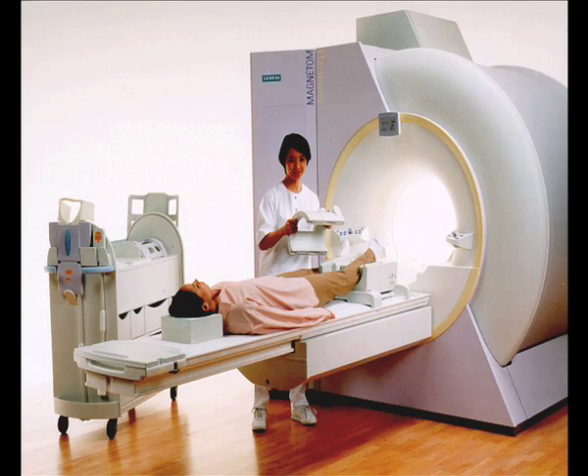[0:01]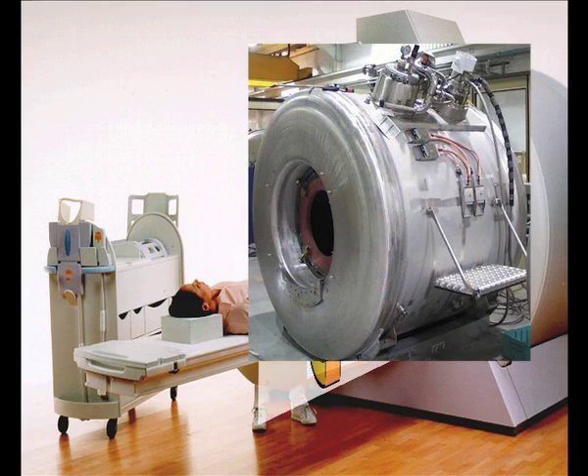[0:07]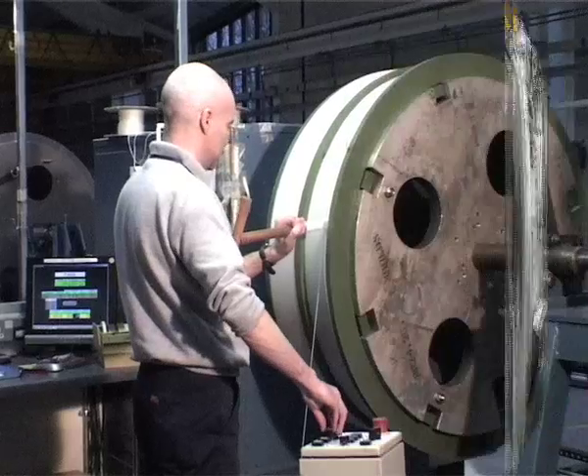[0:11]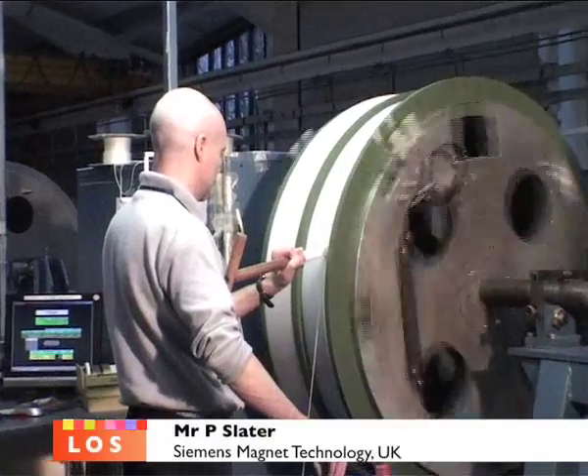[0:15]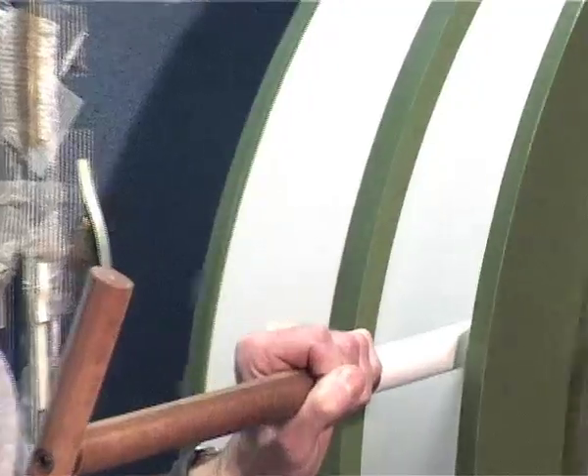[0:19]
Let us have a closer look. What is inside one of the elegant MRI machines, where there is a system of superconducting coils immersed in liquid helium? The winder here is winding one of the drive coils for a magnet, which will form the Helmholtz pair at the end of the system.
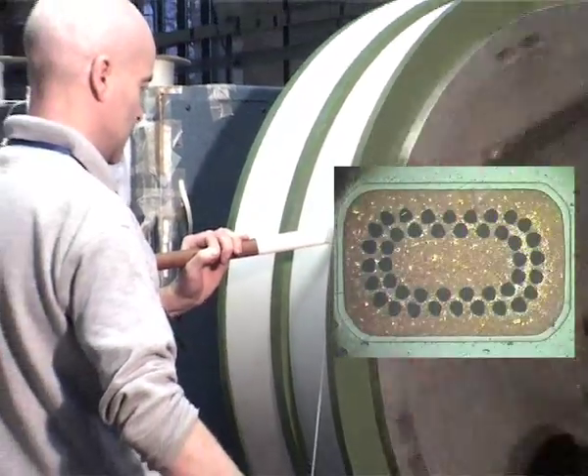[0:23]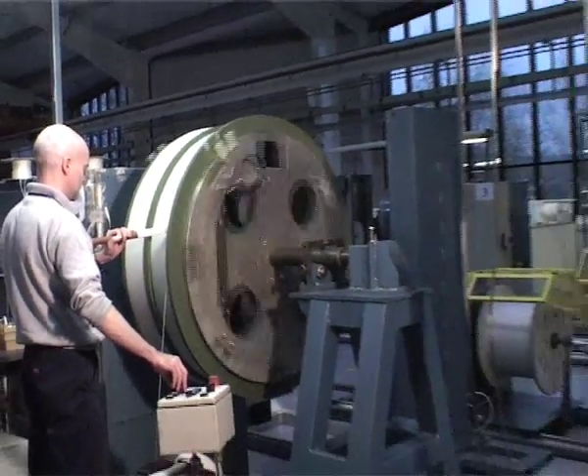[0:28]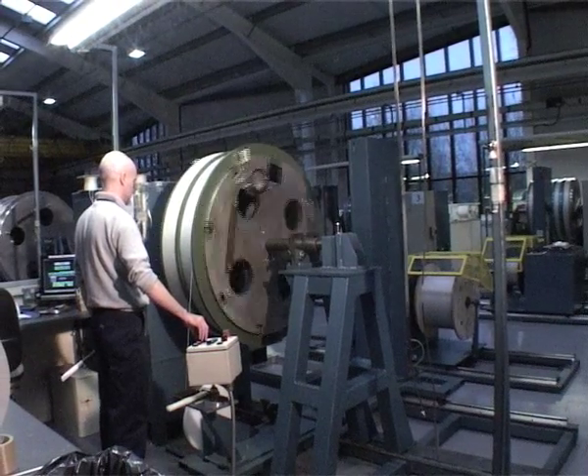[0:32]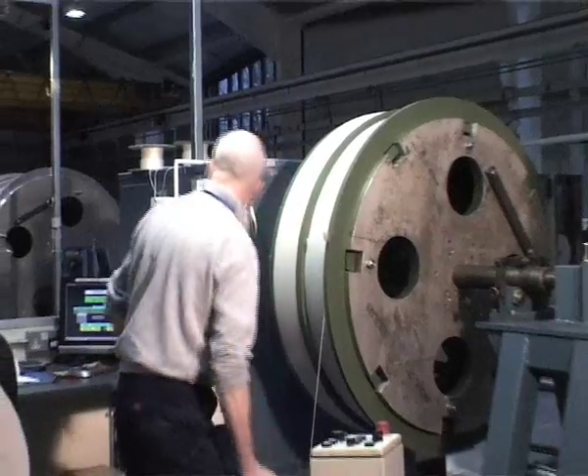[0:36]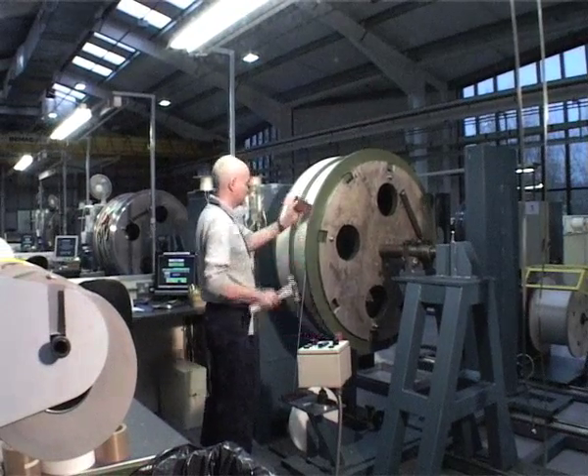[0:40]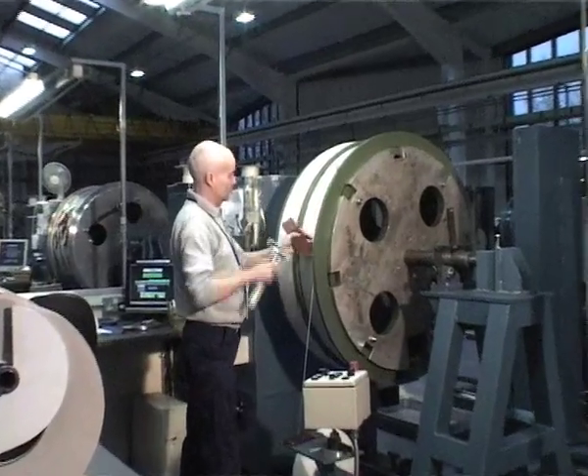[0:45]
We wind using rectangular wire. This improves the winding process, makes sure that every layer, well, turn to turn, winds consecutively and stays in exactly the position we want it to stay in. At the change from layer to layer, we have to make sure we don't have any electrical shorts.
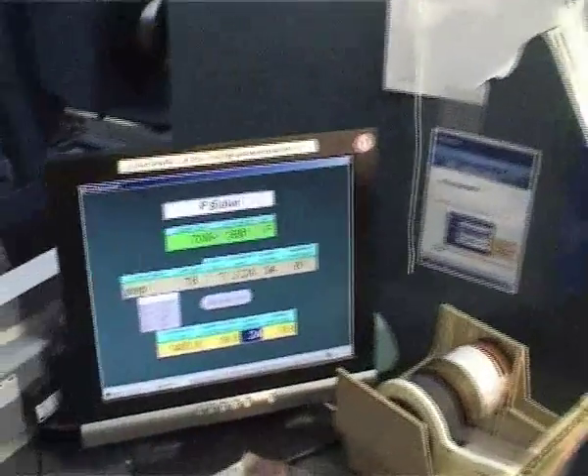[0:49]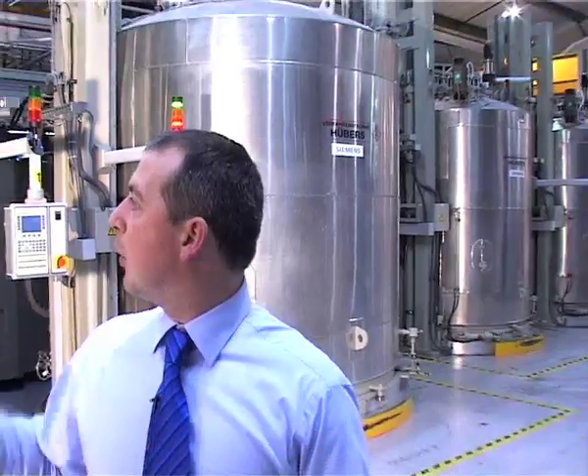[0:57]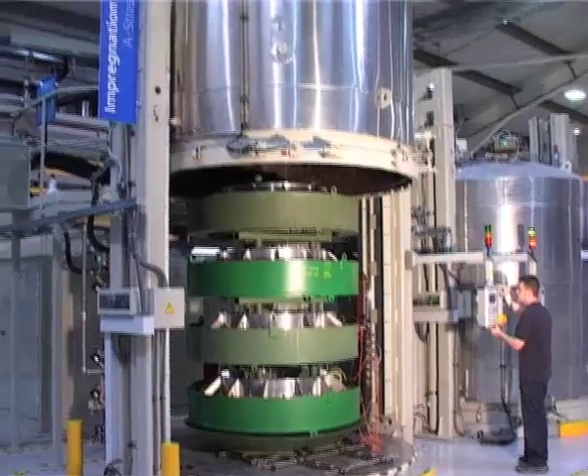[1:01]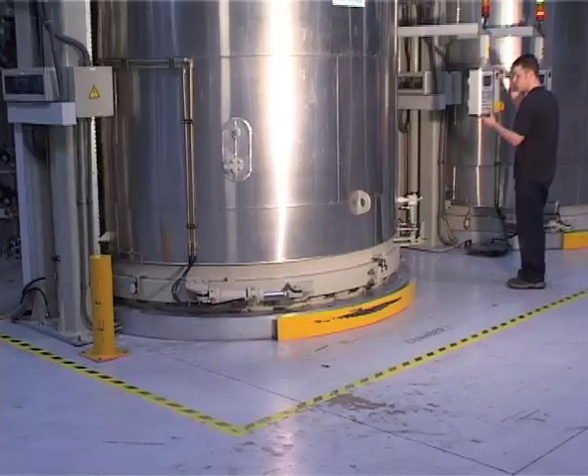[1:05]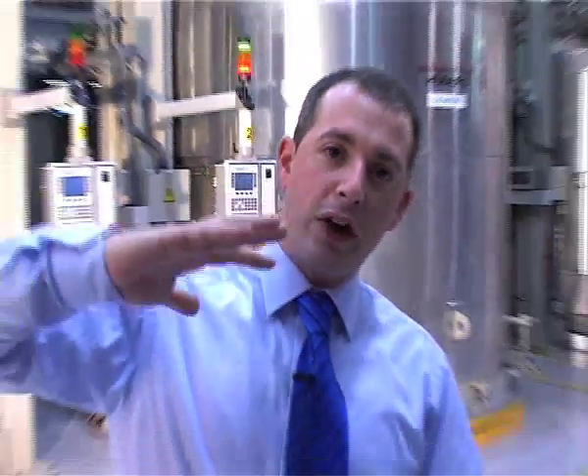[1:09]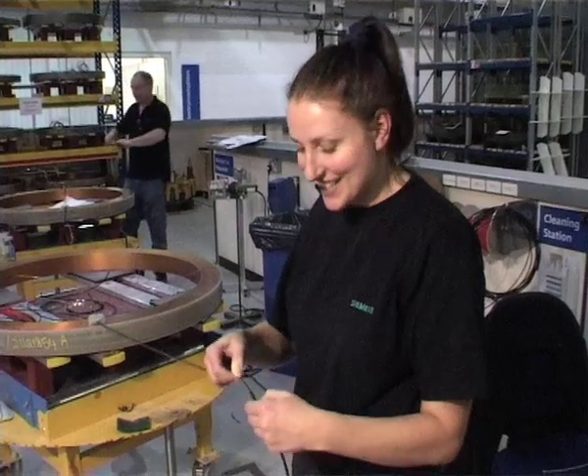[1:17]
In this area, we vacuum impregnate our coils. This is where we get resin. We evacuate these chambers. We then fill each of the troughs with resin and then apply an overpressure to ensure that the resin is pushed down into the coils. We then allow the coils to set, and this gives us one compound structure. These heater wires, I'm pushing polyolefin over the top for insulation.
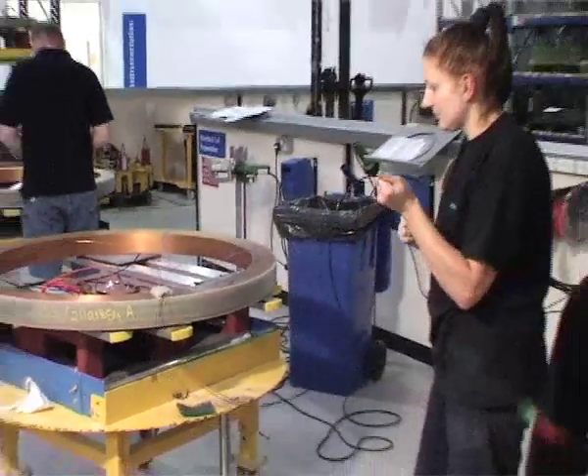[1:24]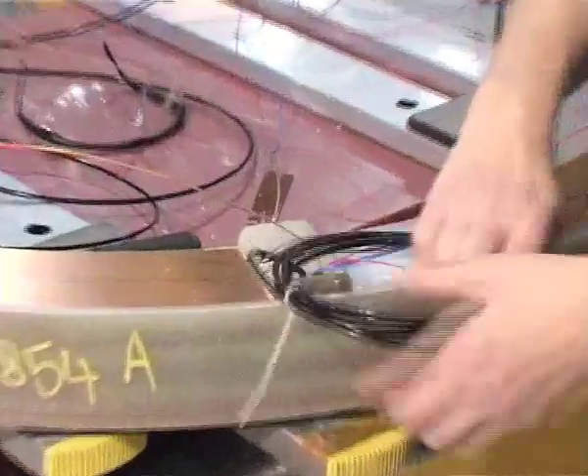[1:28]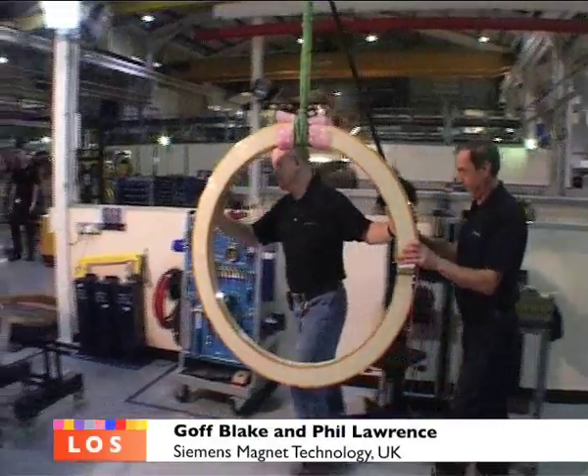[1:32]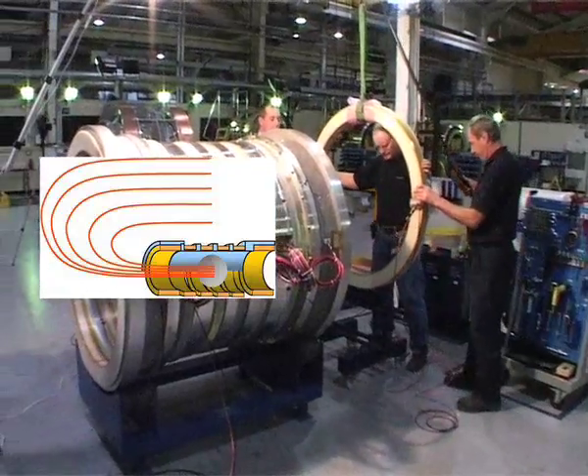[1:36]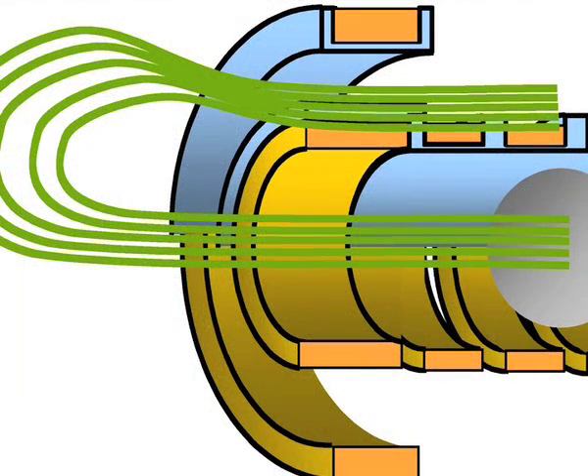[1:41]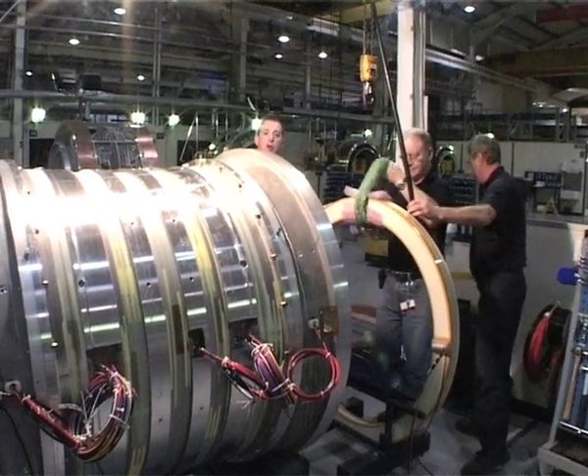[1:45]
This final molded coil is the last piece of the inner magnet. All of these coils run in the same orientation with the current, and will be added to other coils which run in opposition to these coils. The peak field inside of this coil reaches approximately 5.5 to 6 Tesla.
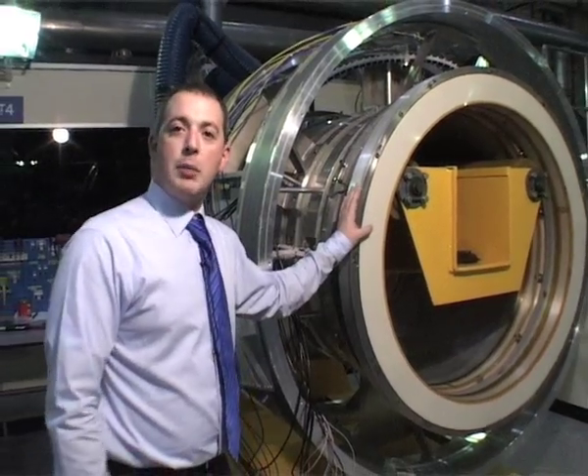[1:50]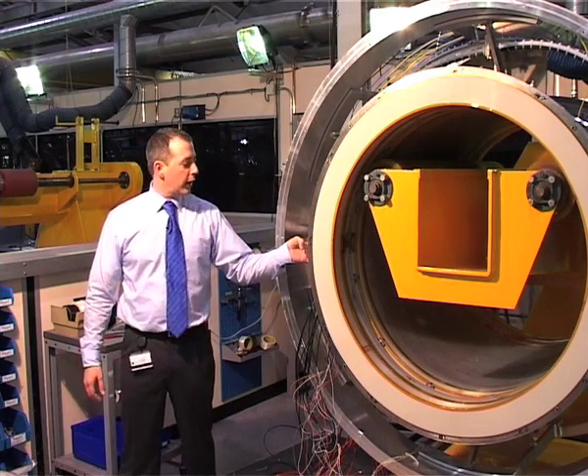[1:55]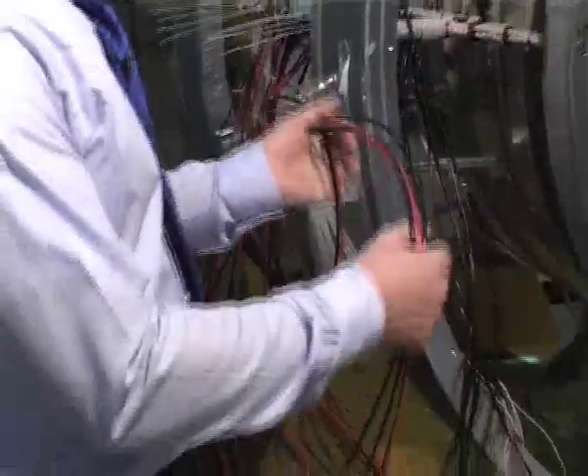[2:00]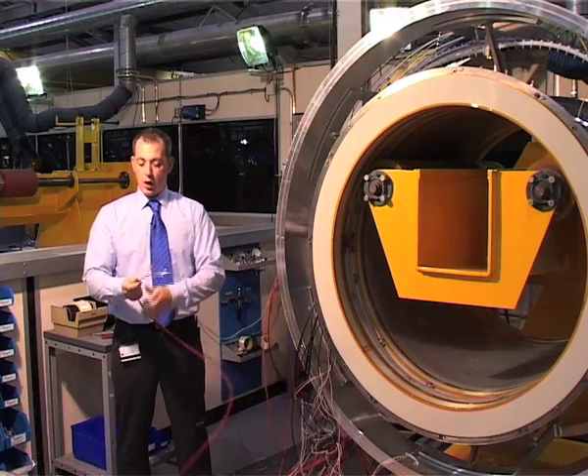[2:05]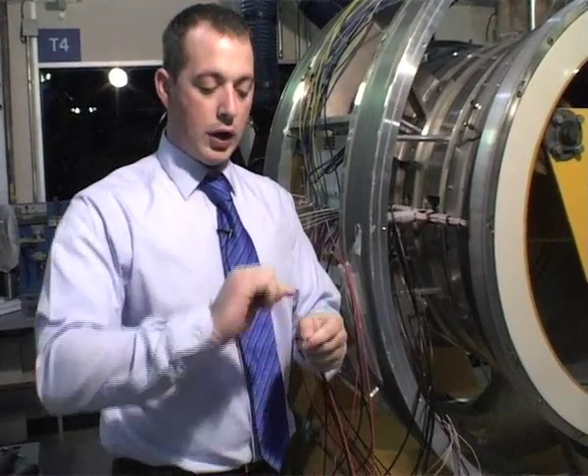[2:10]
Here we have a fully assembled inner of the magnet. As you can see, all of the leads that we saw earlier are all routed now into one central place. These wires, all the black and red, are connected end to end via a jointing technique, which allows a persistent current to run straight from one wire into the other wire. With new materials like HTS, it's also very difficult to make an electrical contact, because to solder the silver together is a simple job, but to make a really superconducting contact with a picoohm or less resistivity.
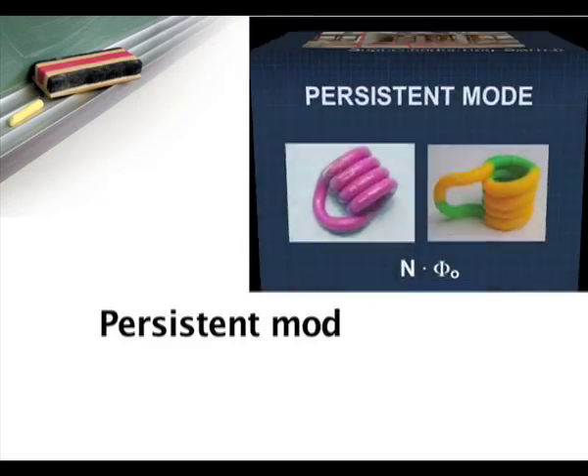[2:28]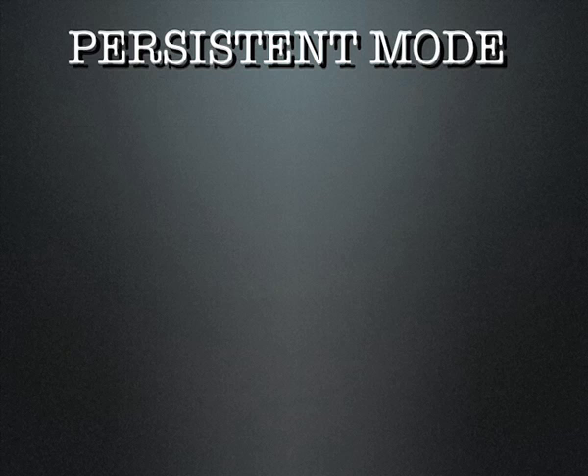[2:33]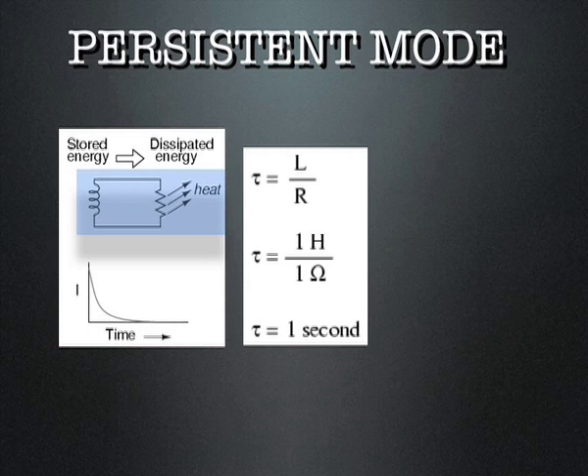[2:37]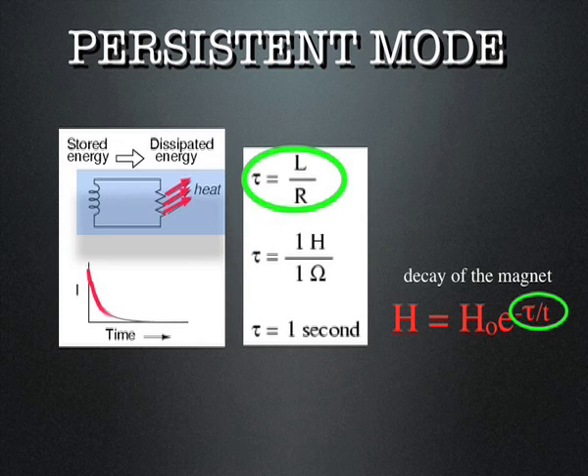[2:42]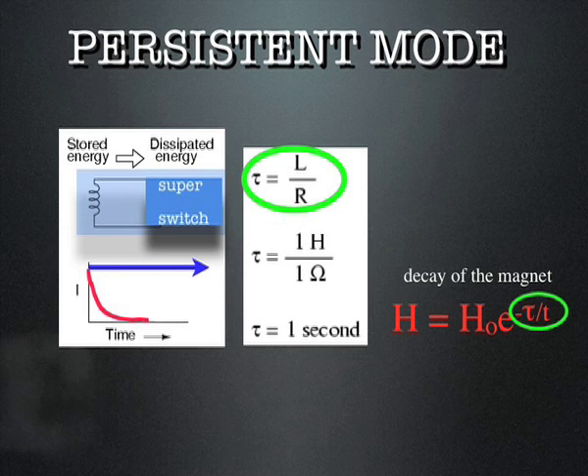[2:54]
If the superconducting coil of the given inductance is bridged with a non-superconducting lump, the trapped flux and subsequently the superconducting current decay very quickly, according to the equation expressing the decay time constant as inductance over resistance. This case is represented by the red curve. If the resistive clump is replaced by a superconducting bridge, so the whole circuit is in a superconducting state and resistance is equal to zero, the decay time constant tau has a very high value and the superconducting electromagnet is in a persistent mode.
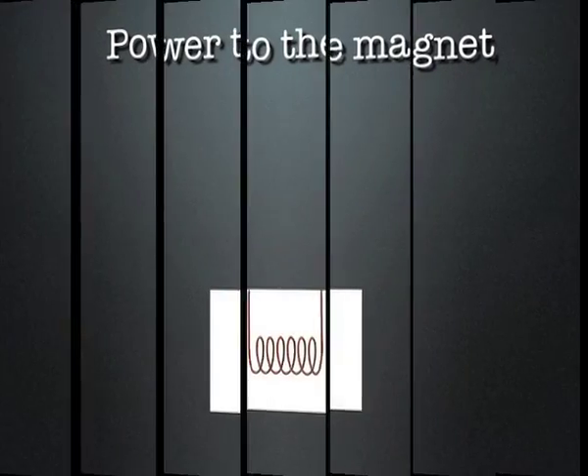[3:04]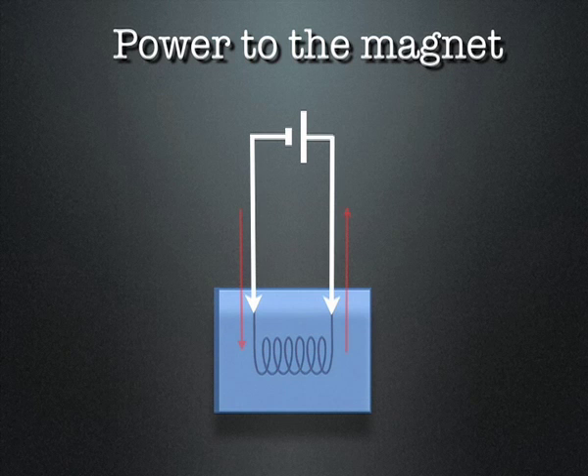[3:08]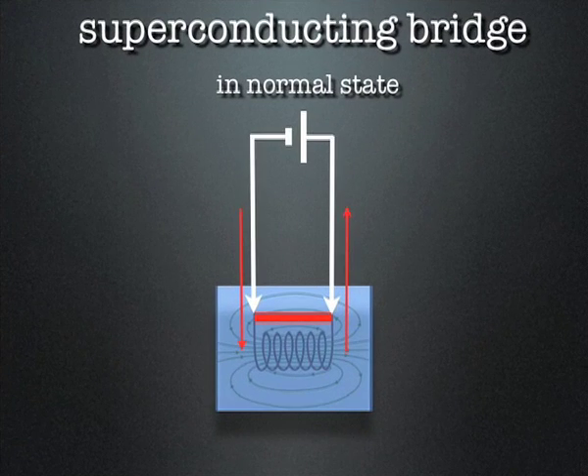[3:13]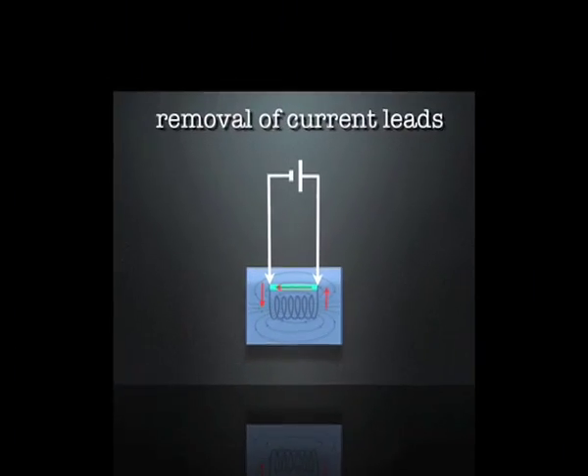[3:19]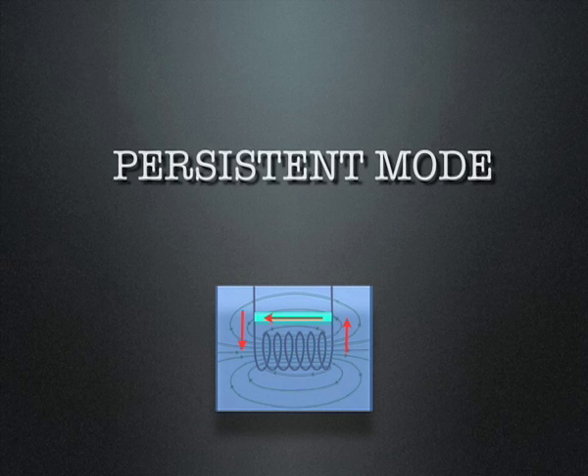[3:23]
The following animation underpins the stages of charging the superconducting electromagnet bridged by a superconducting switch, initially in the normal state, followed by the superconducting state after reaching the desired value of the flux density in the superconducting electromagnet. Removal of the current leads in the final stage reduces the heat leak to the liquid helium bath. Now the MRI machines of Lotus C are stable. Basically the resistance in the magnet is so low that they will not decay within 1,000 years or so.
But in the beginning of MRI this was different. The superconductor was not so good, in particular the joints, and the joint technology was not so reliable that all magnets were good enough. The difference between an LTS magnet and an HTS magnet is that LTS magnets you can run in persistent mode. You don't need a power supply. And for HTS magnets, you will need a power supply in order to run them.
And to do MRI or to do NMR, you need an extremely stable magnetic field. And this needs a very stable, high-performance power supply. And for HTS magnets, we need new solutions like flux pumps again.
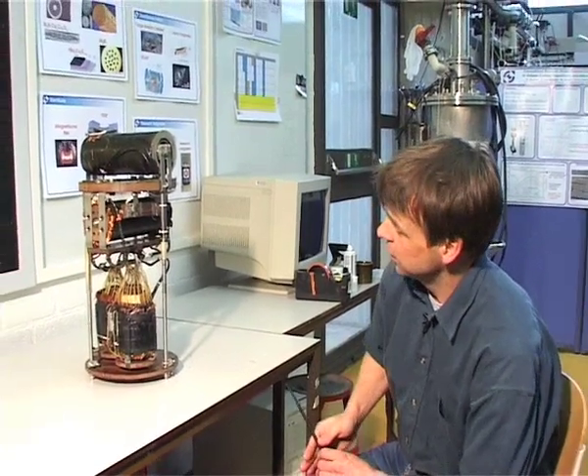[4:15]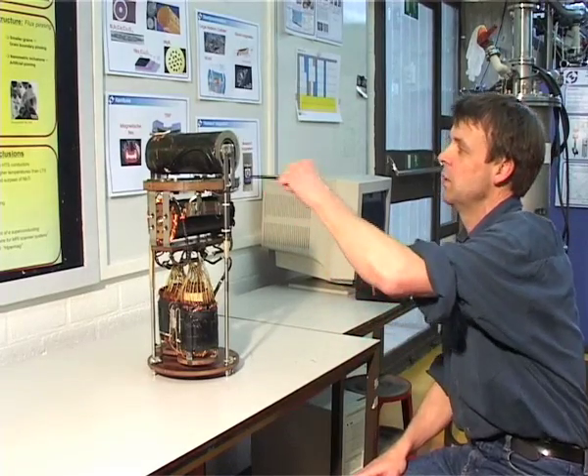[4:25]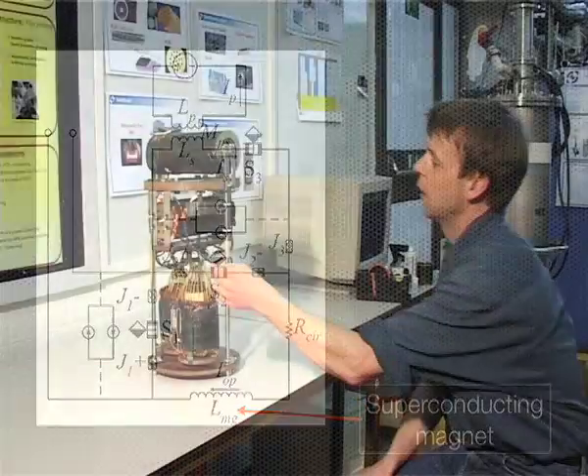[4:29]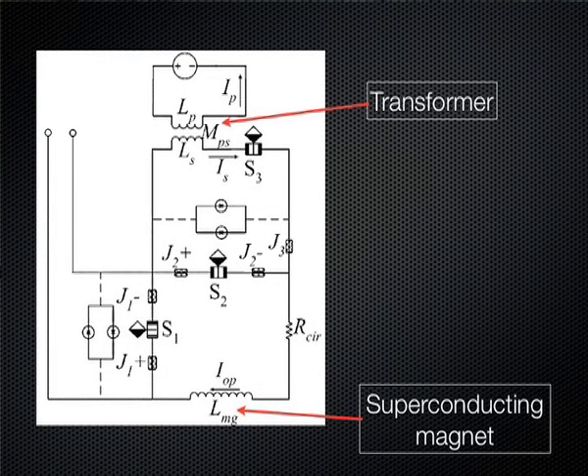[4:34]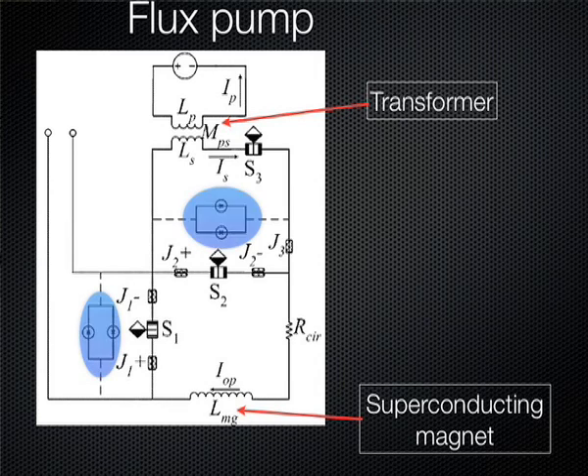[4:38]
What you see here is a very old version of a flux pump or superconducting rectifier. And it contains several elements. First of all, the energy has to go somewhere, so that is a kind of a dummy load where all the energy goes. And then we have a transformer, which is here. This is an entirely superconducting transformer circuit. And the rectifier contains normally diodes, and the diodes are then replaced by a superconductor that is switched from the superconducting to the resistance state.
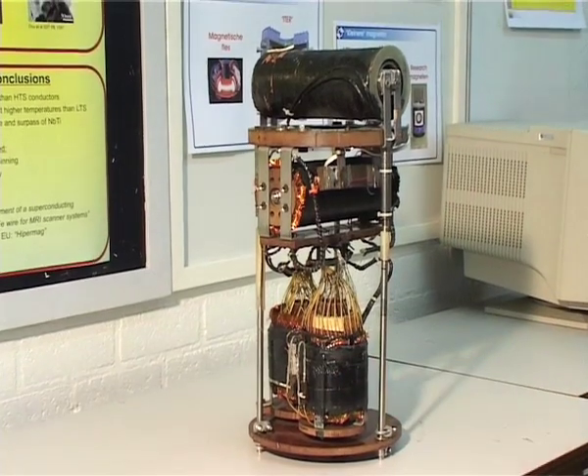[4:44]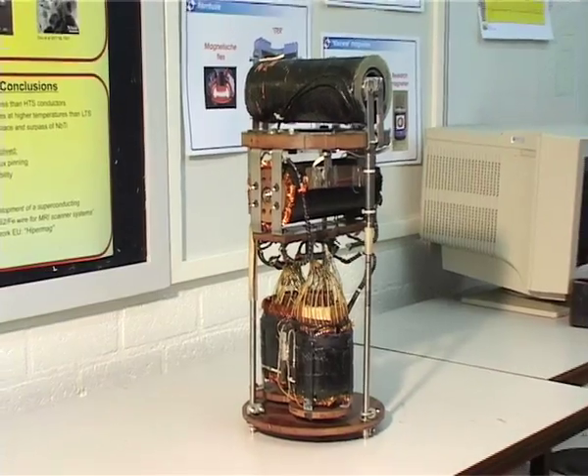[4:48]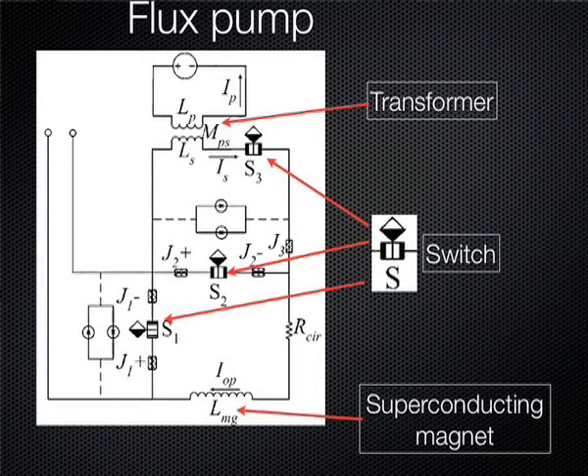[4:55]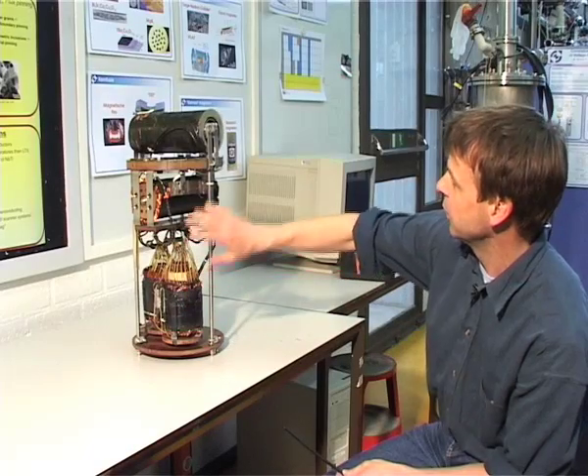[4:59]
There is a magnetic field in the superconductor switched on and off, and that is only done by smart choices of superconducting material. So there's a niobium zirconium material used as the material that will be switched. But then you can apply a current of like 500 amperes to this load while you have a control current of less than an ampere.
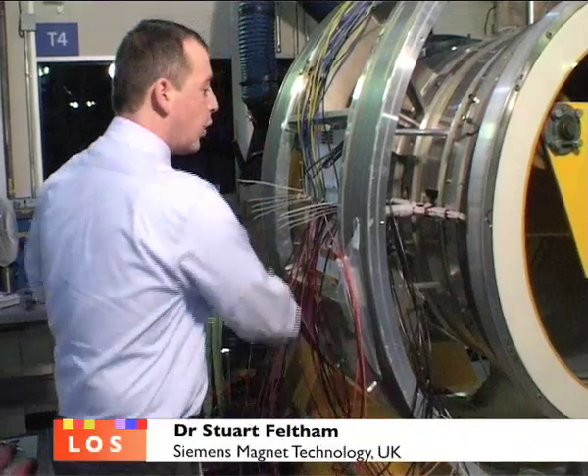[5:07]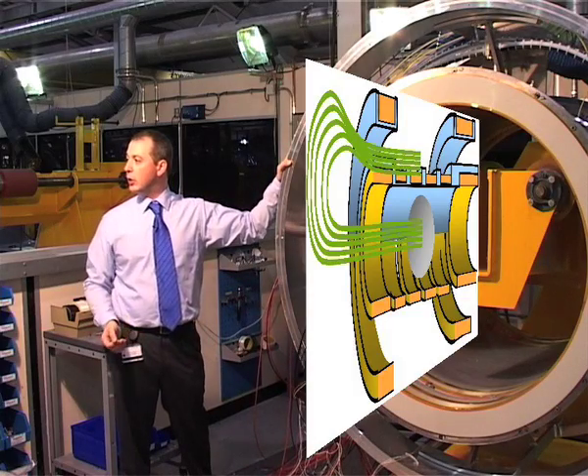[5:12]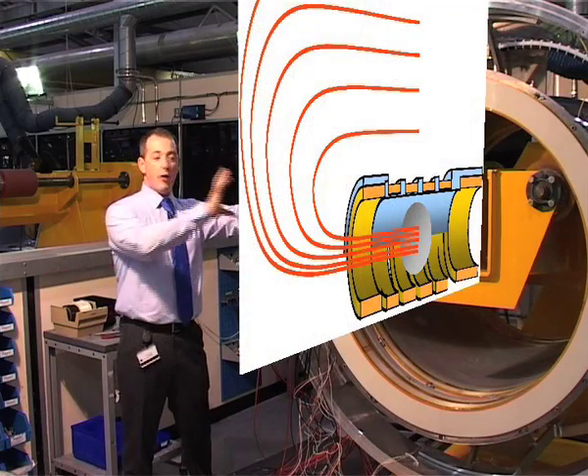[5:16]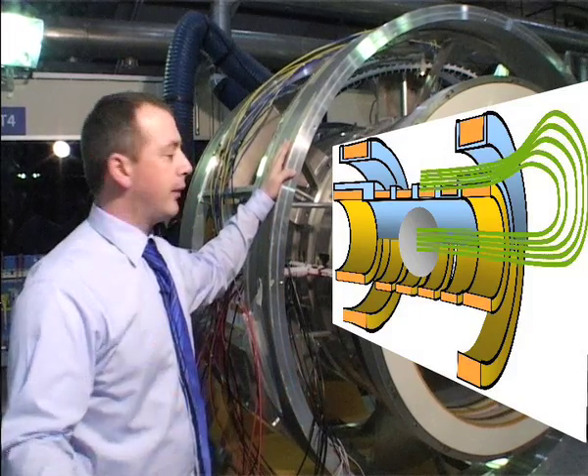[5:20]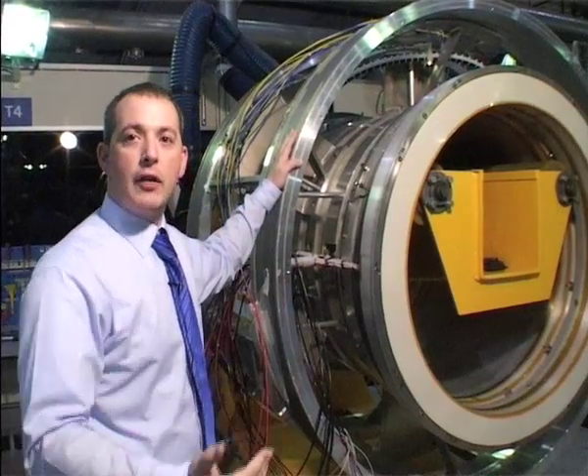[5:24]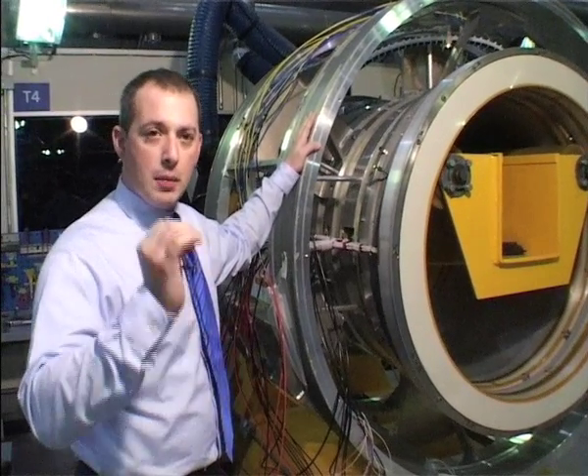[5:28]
This circuit's also connected to two further coils, which we call the screening coils. These coils reduce the stray magnetic field of the inner magnet. Without these coils, we would have large iron shields all around the room, which are very heavy, only allowing MRI magnets to be sited in basements or on ground floors.
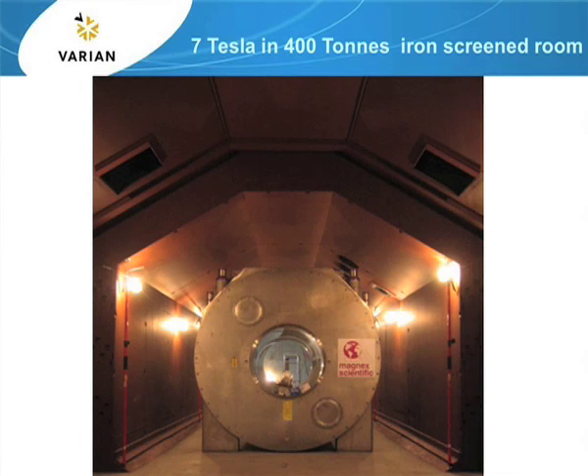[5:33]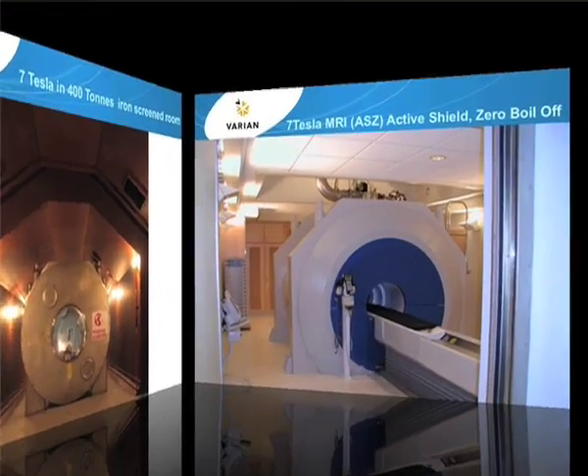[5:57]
So that shows a picture of a 7 Tesla whole body magnet. The magnet itself is not actively screened, so without some additional shielding, the stray field goes out about 40 feet, and the five gauss line is about 40 feet away from the magnet. It's rather out of space. So this picture shows the magnet in an early part of the installation, sitting inside a 400-ton iron screen room. And the purpose of the room is purely to contain the stray field.
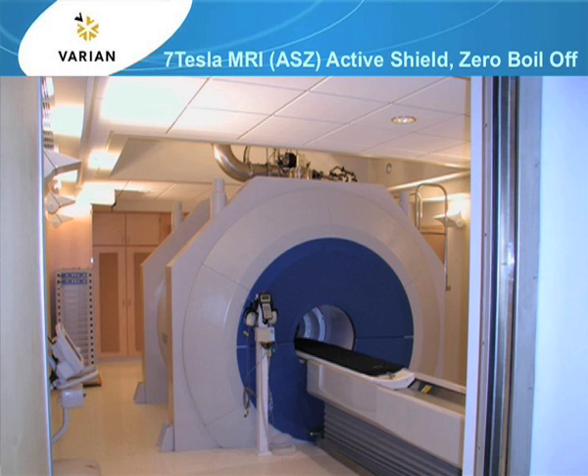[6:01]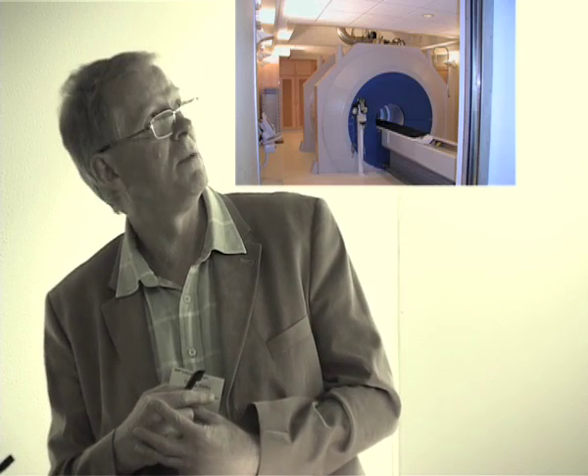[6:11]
We've come up with some interesting new magnets, which will show you how the whole technology of MRI magnets has moved forward. The magnet I'm going to talk about is the 7680, that's the bore in millimetres. The AS is actively shielded, Z meaning zero boil off. And because it's actively shielded, it doesn't need a sealed room to contain the five gauss line.
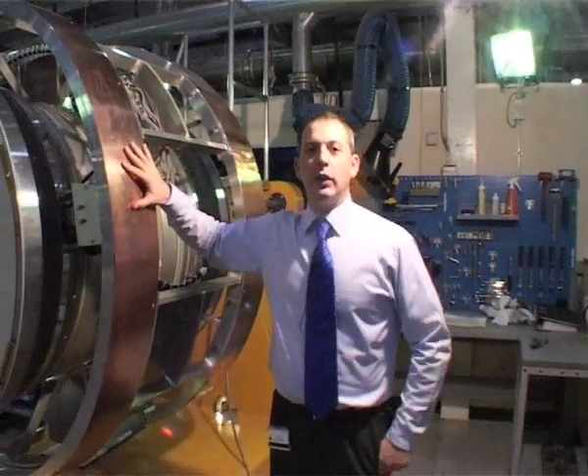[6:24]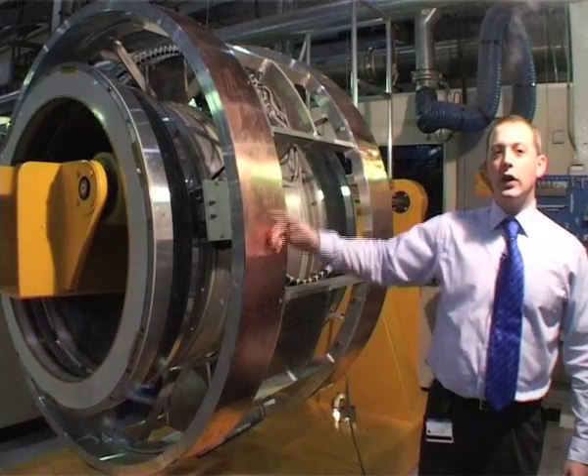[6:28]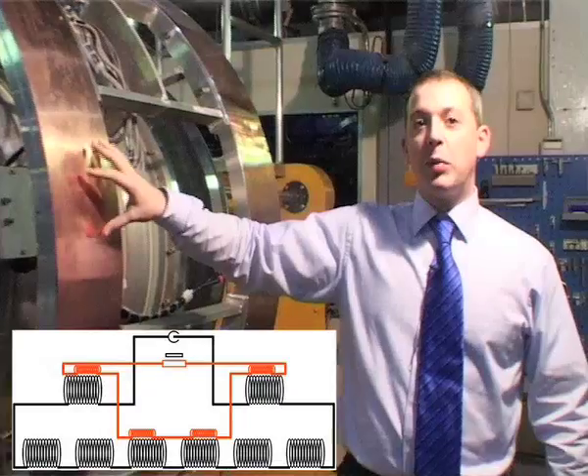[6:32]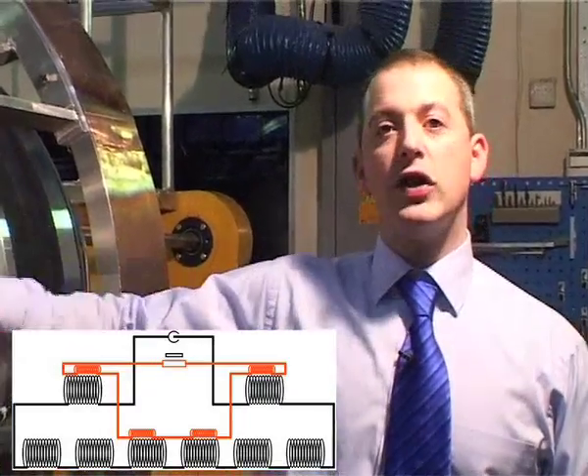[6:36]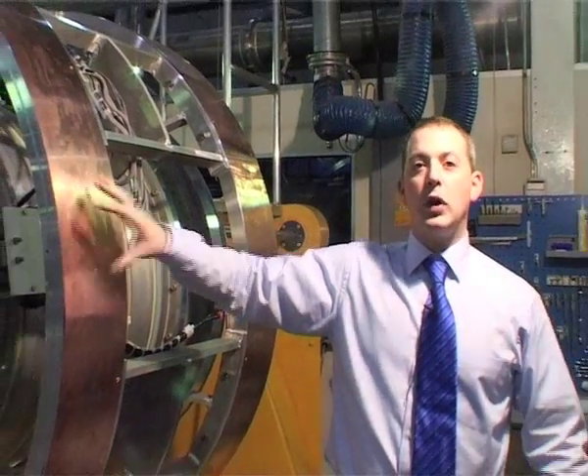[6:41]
Here's a finished magnet. We now have the outer coils covered with a piece of copper. This copper forms a complete ring and is used when the magnet quenches to prevent a stray field burst. As the magnet quenches, eddy currents are generated inside this piece of copper, which oppose the stray field burst produced by the rest of the magnet.
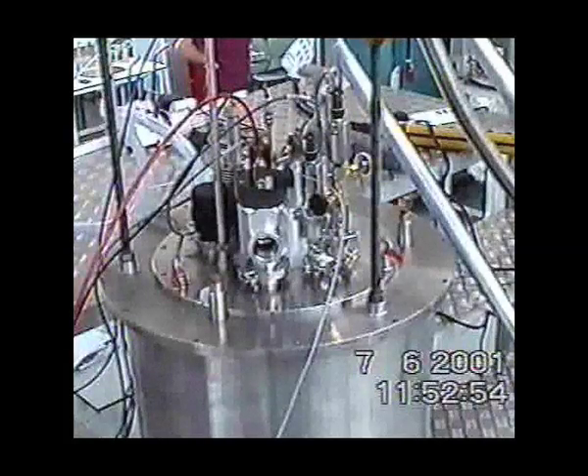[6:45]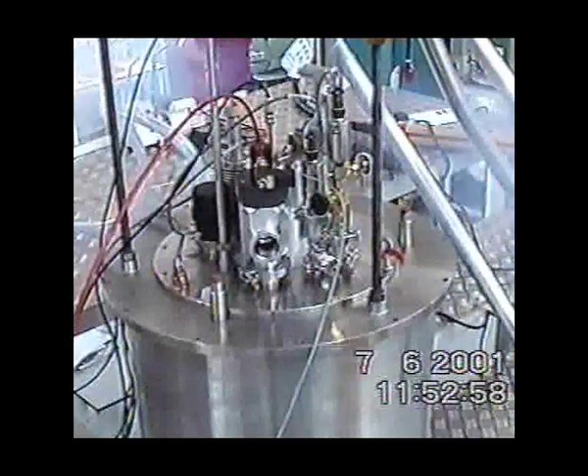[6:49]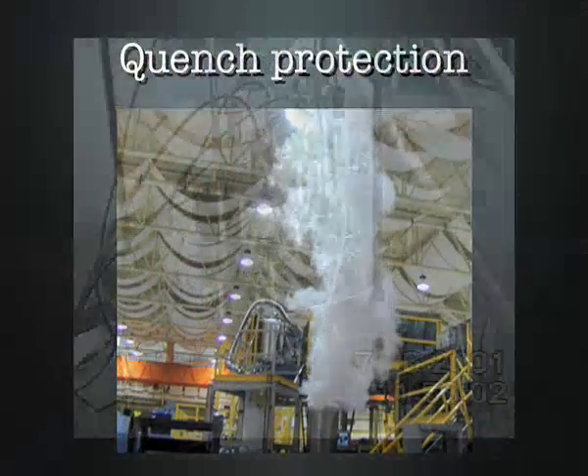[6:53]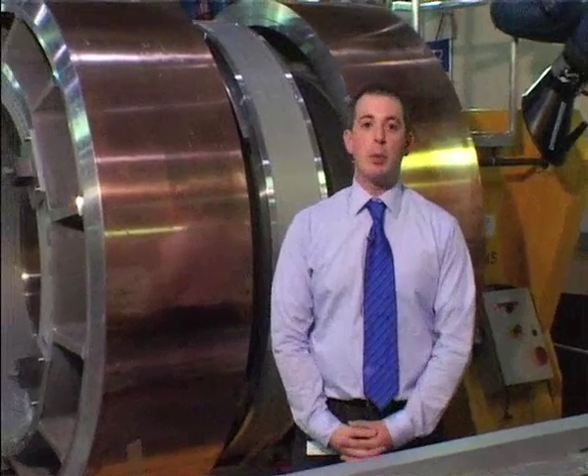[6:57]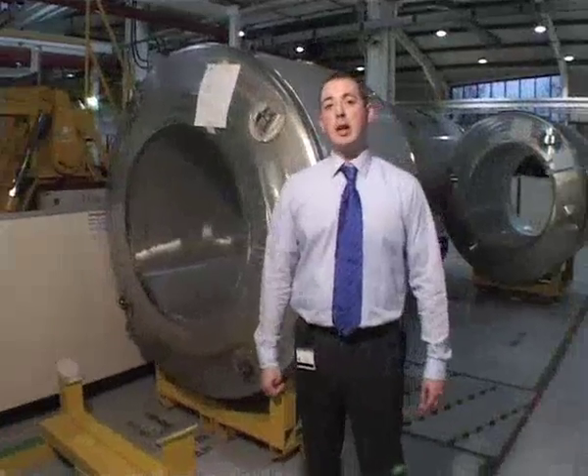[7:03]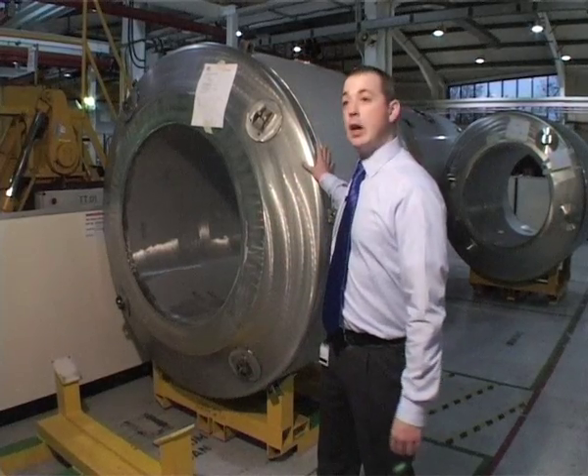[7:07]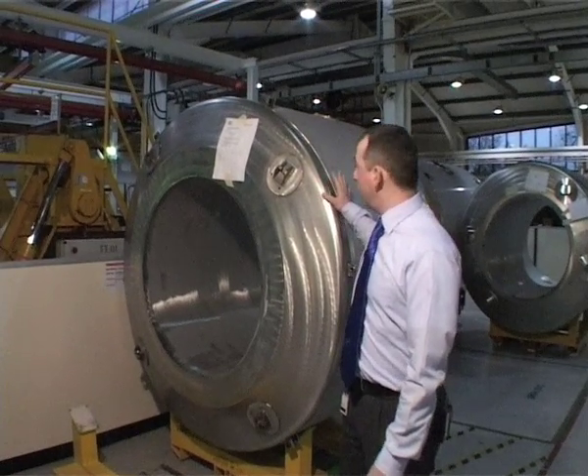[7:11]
If we have a fault during coil winding or during impregnation, the cost of scrapping a 20-kilometer coil is very significant. The superconducting magnet, once finished, is put inside this stainless steel helium can. Inside of this helium can will be at 4.2 Kelvin. Obviously, this needs to be isolated from the outside world.
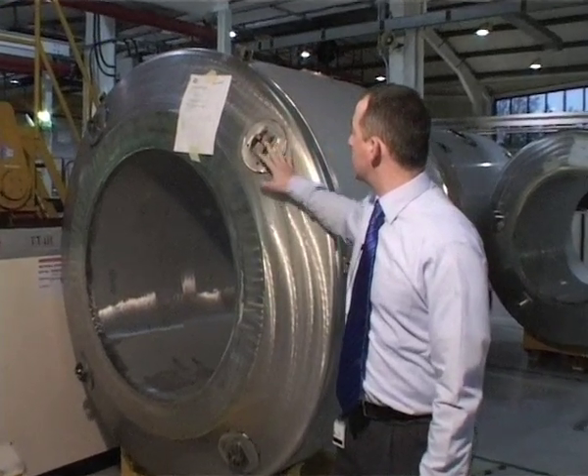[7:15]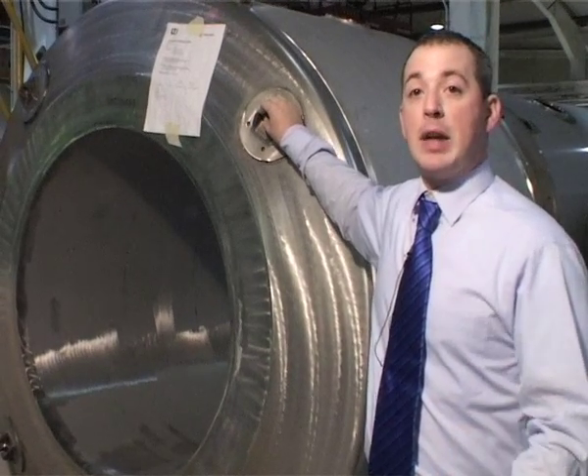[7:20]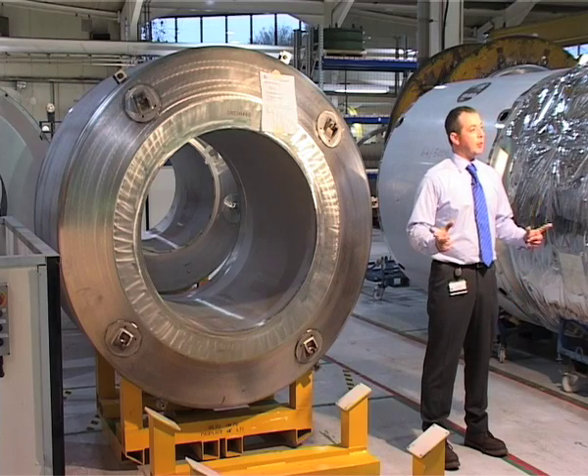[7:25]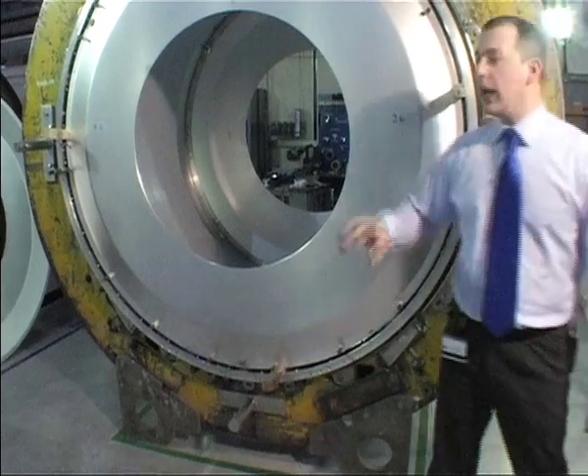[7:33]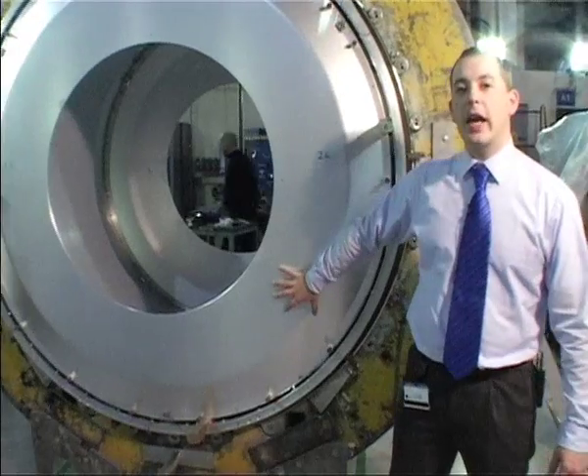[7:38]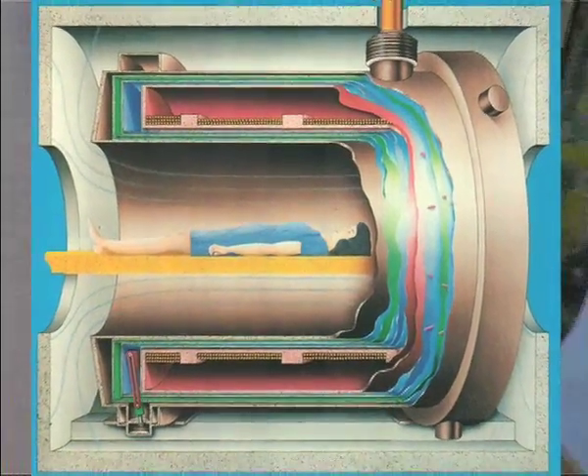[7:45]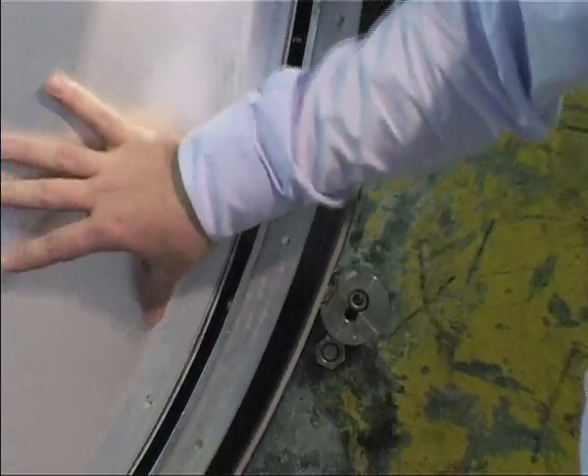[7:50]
This isolation comes in the form of a vacuum space, but obviously we need to suspend the cryostat inside of its room temperature environment. The suspension is obviously low thermal conductivity material, and is attached at these four points on either end of the magnet. The helium cryostat goes inside of here. This is then shelled by a 20K thermal shield. This 20K thermal shield is then separated with the use of a vacuum space from an 80K thermal shield, both of which are attached to a Gifford McMahon cooler.
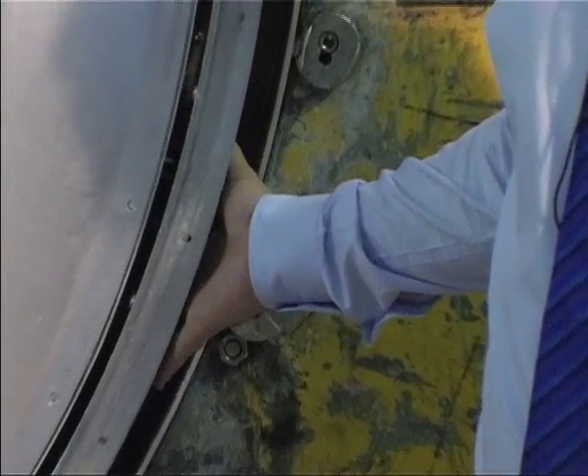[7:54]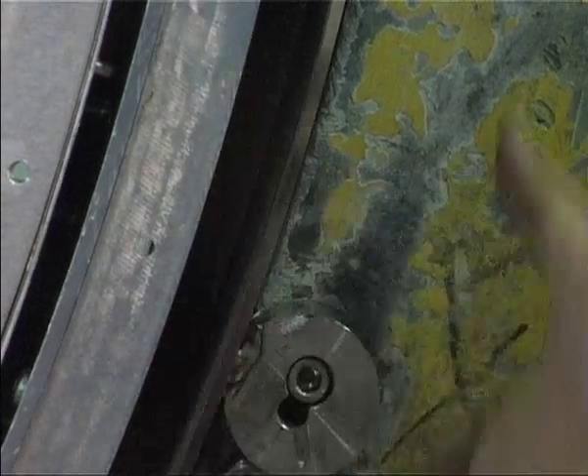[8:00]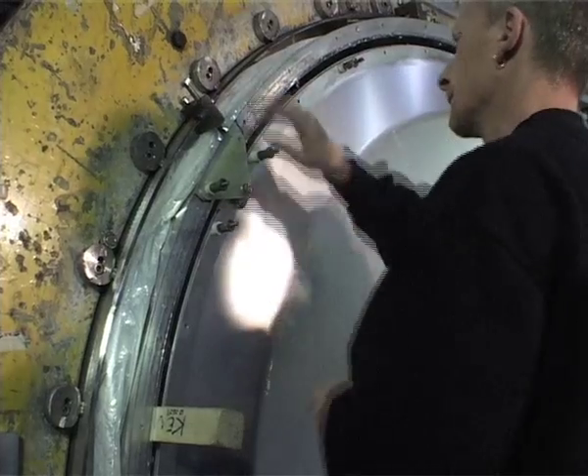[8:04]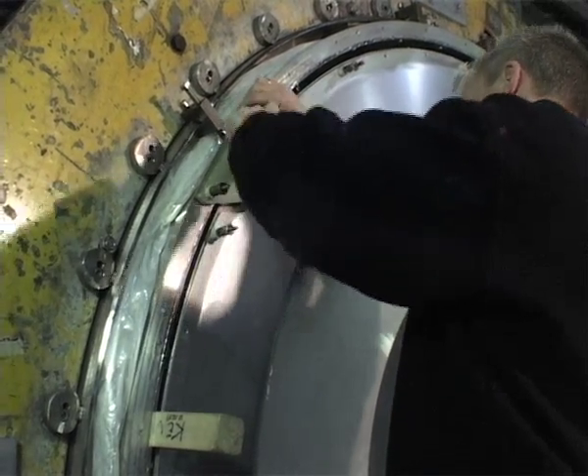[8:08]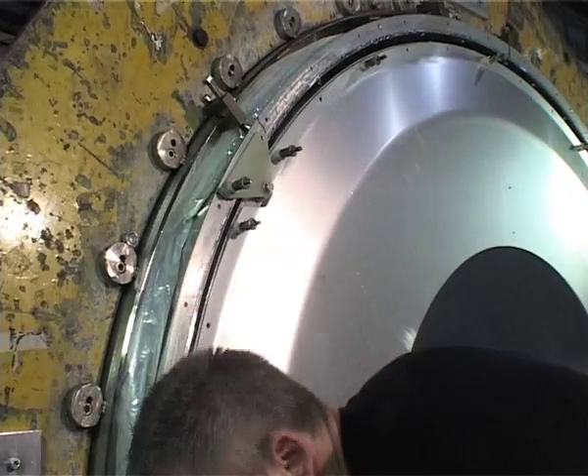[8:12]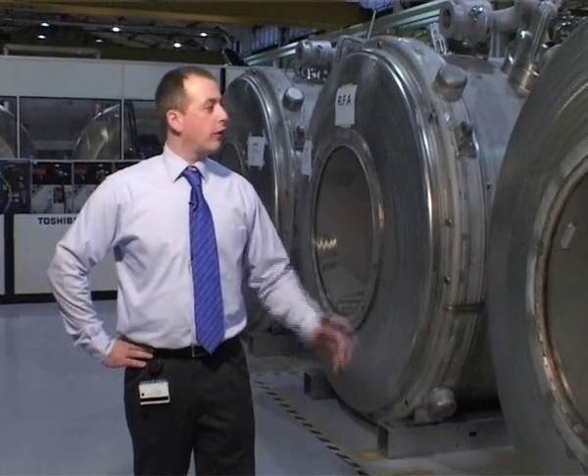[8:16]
Outside of the 80K shield, we have many layers of super insulation, which acts as the final radiation shield before we get to the outside room temperature cryostat. We need to make sure that the adjustment of the thermal shields is correct so that we do not have any thermal touches from the 80K shield through to the room temperature. All of these systems are now complete and ready for acceptance.
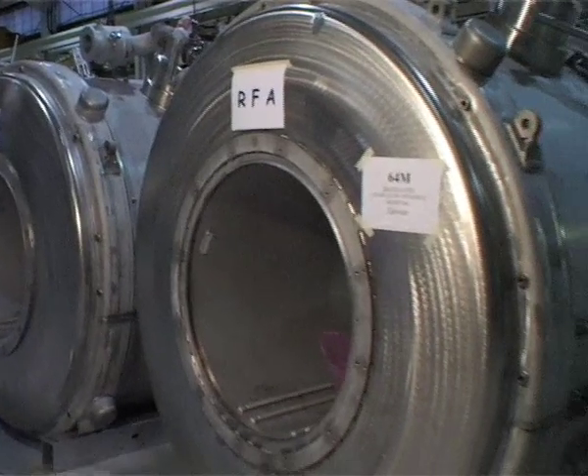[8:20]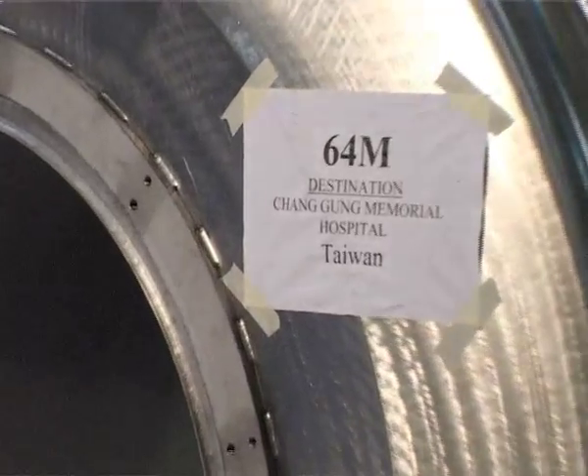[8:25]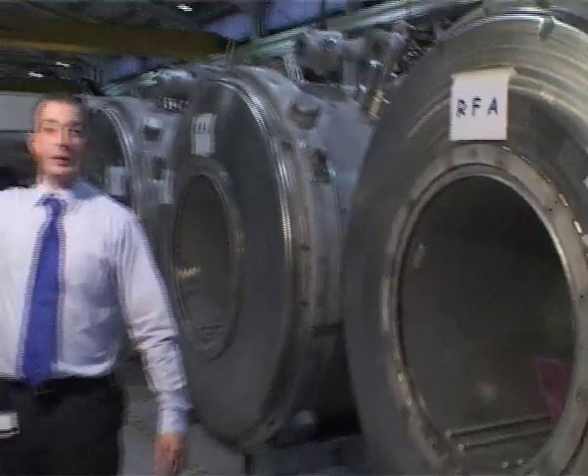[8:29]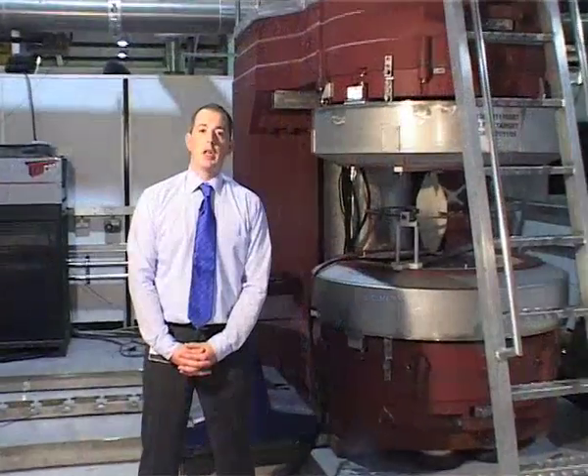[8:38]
We ship our magnets to many parts of the world, including Taiwan, Germany, the USA, and Japan. We're doing a 77 Kelvin electrical test, checking everything after it's been nitrogen filled, before we take it any further into helium filled. Superconducting magnets aren't confined just to solenoid magnets.
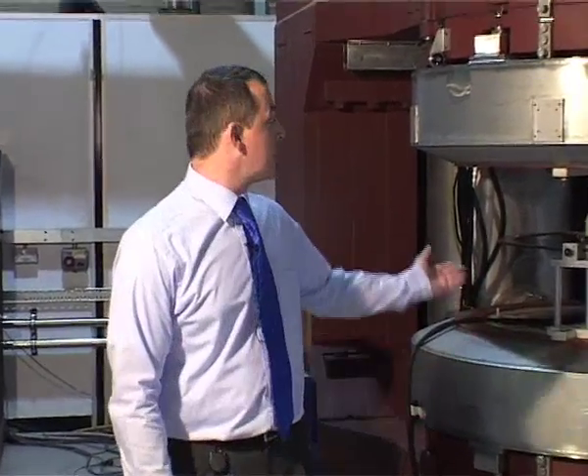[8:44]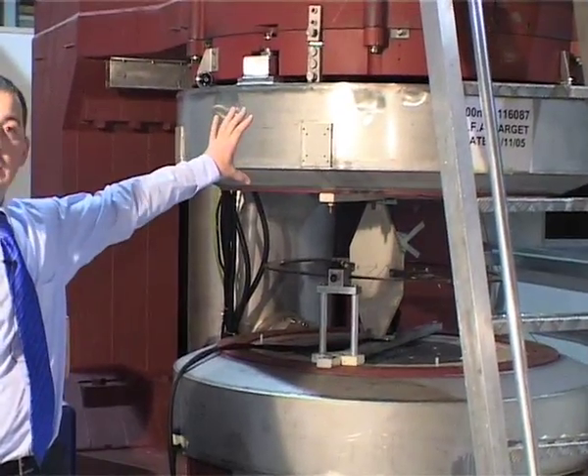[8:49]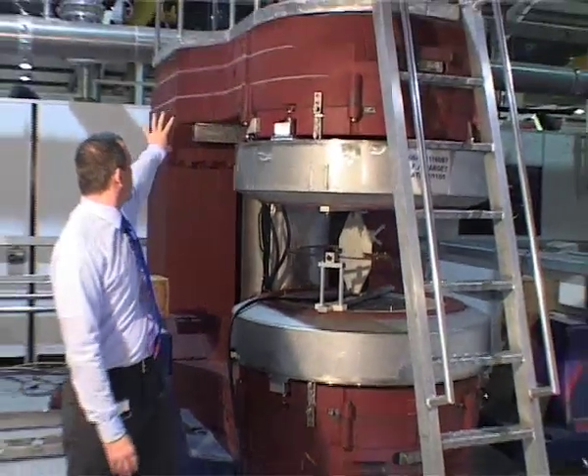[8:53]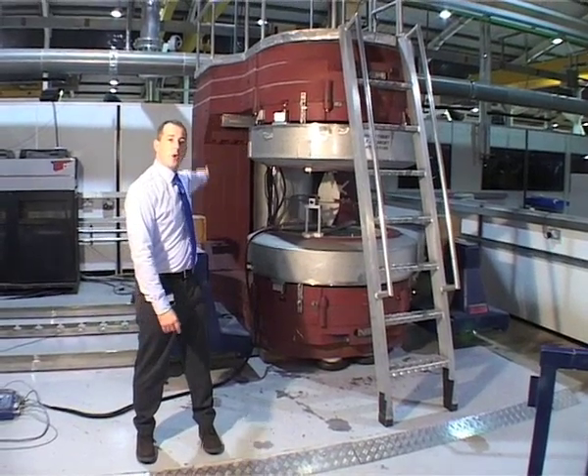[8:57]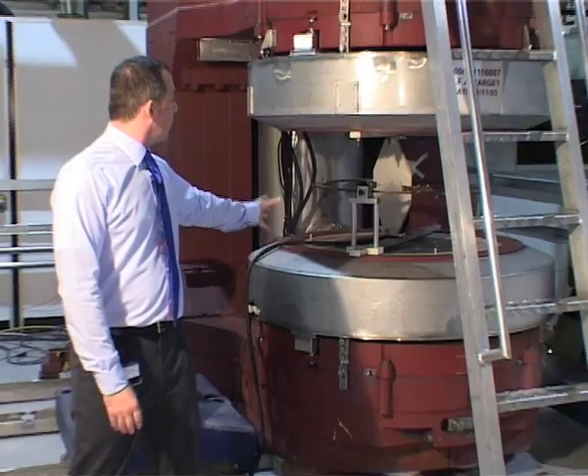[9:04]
We also have C-style magnets, such as this one behind me. There are two superconducting coils, one in each side, each in their own small cryostat. And then this large red section that you can see forms a C iron yoke. This iron yoke forms part of the magnetic circuit with the field lines crossing from one pole to the other.
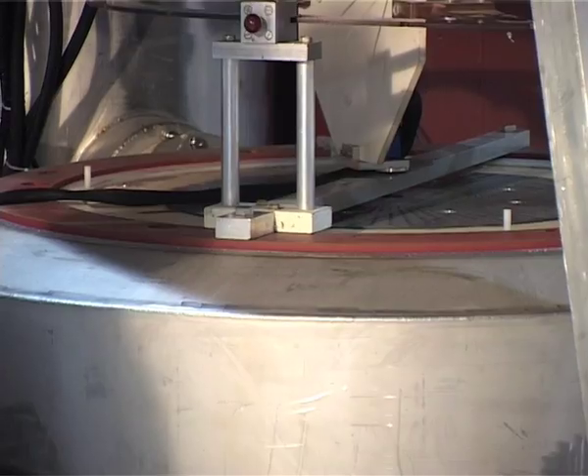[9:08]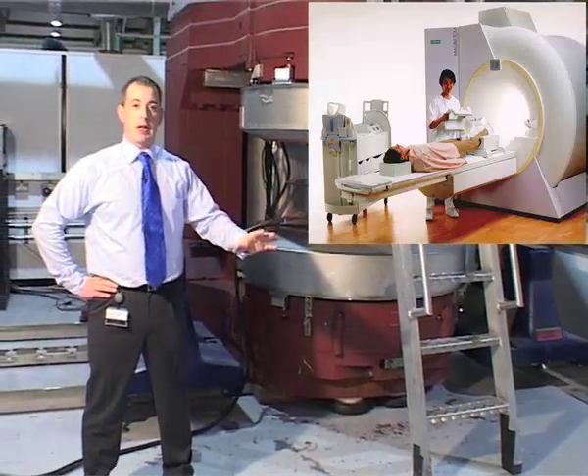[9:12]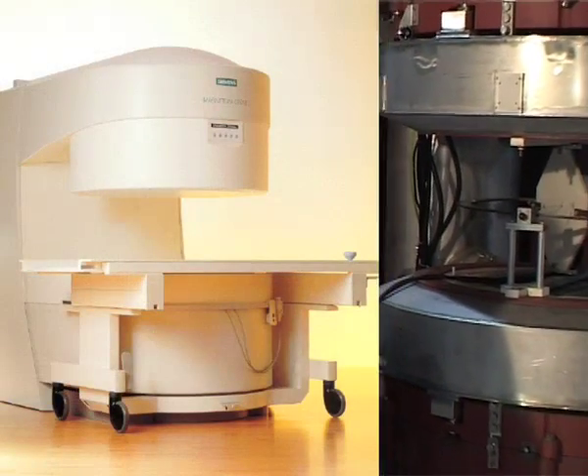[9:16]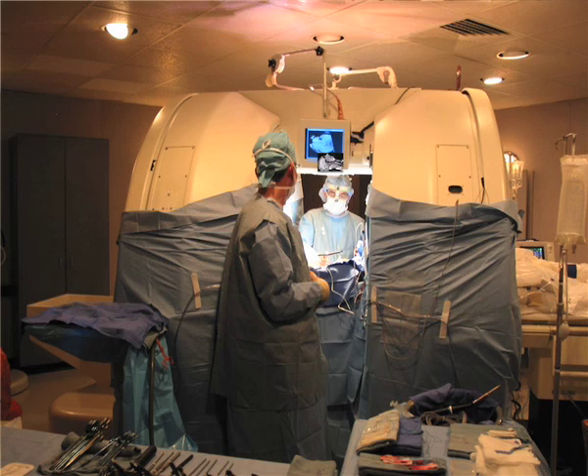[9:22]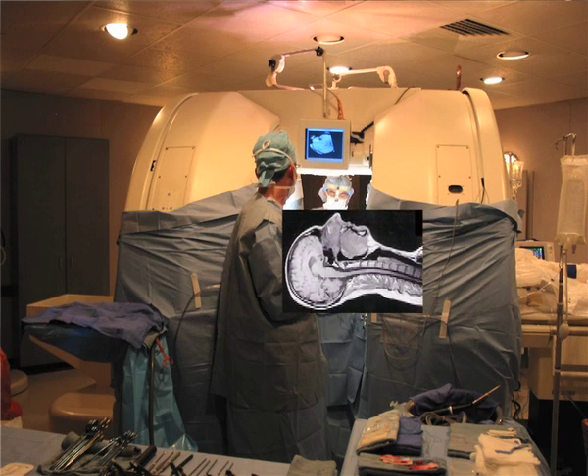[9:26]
This magnet has advantages over the solenoid magnets because it is open, so claustrophobic patients find it easier to enter and exit these scanners. However, they do have their limitations. The field strength of this magnet is approximately 0.6 Tesla. Open magnets struggle to go above this field strength due to their cost.